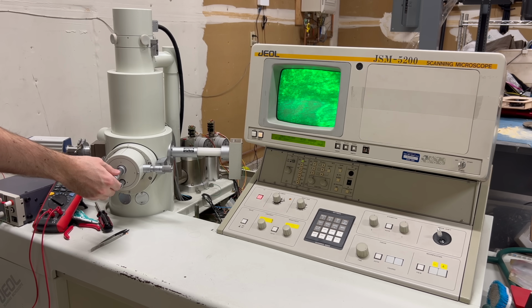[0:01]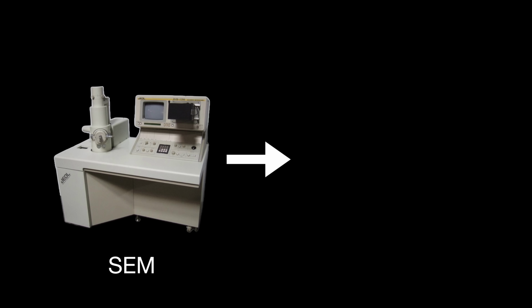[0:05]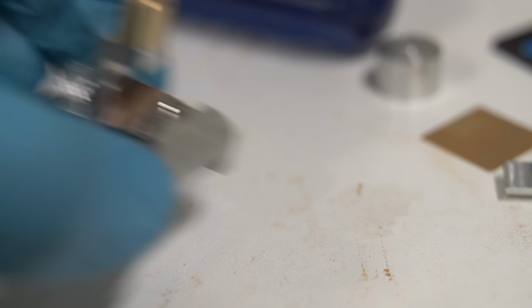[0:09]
In a previous video, I repaired this old scanning electron microscope. Today, we're going to convert my scanning electron microscope into a transmission electron microscope by making this.
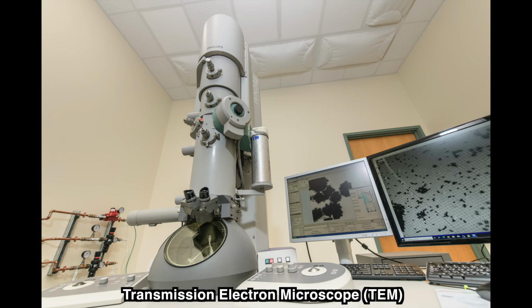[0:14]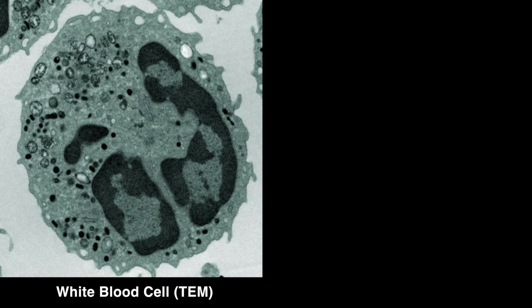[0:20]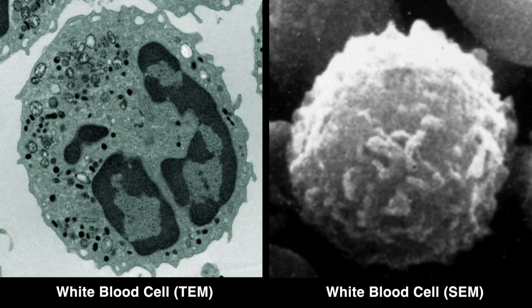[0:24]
Okay, first things first. What is a transmission electron microscope, and why do I want one? Well, the simple answer is that a transmission electron microscope can see things that a scanning electron microscope cannot. However, to fully understand that statement, we need to talk about how an electron microscope actually works.
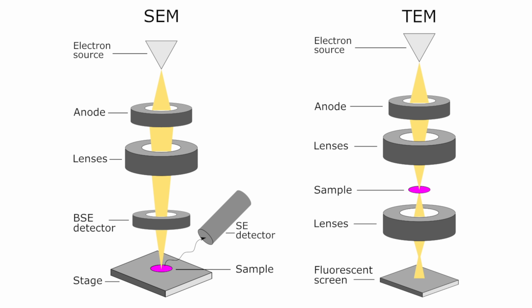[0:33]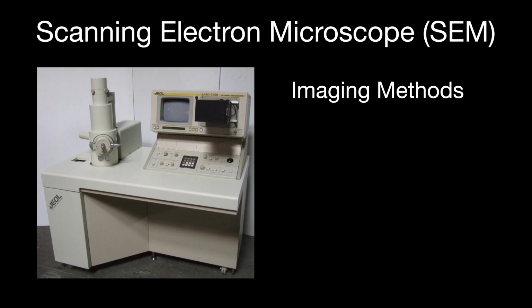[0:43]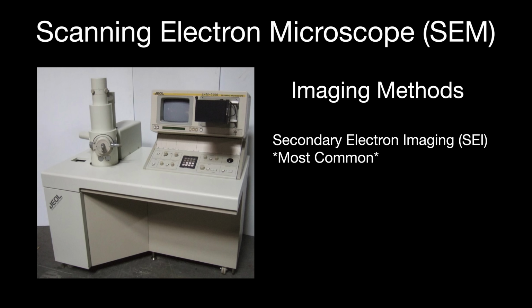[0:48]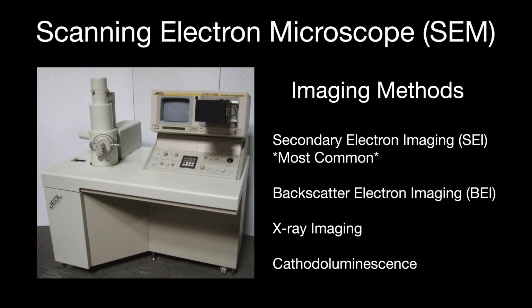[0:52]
You see, all electron microscopes use electrons to create an image, but the exact way that those electrons are used to create the image differs depending on what type of microscope you're using. In a scanning electron microscope, or SEM for short, images are usually created using something called secondary electrons. There are other methods, but secondary electron imaging is definitely the most common.
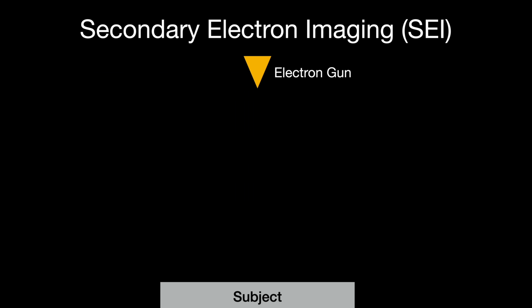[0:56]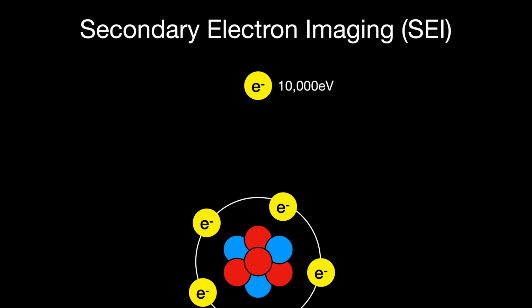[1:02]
Here's how it works. We shoot high-energy electrons at a single spot on our subject to be imaged. This high-energy electron crashes into a sample surface and interacts with one of its atoms, transferring a small fraction of its energy to an electron in the atom. This energy, while small compared to the incoming electron, is still more than enough to eject the electron from the atom. We call these low-energy ejected electrons secondary electrons. And to avoid confusion, we call the high-energy incident electrons primary electrons.
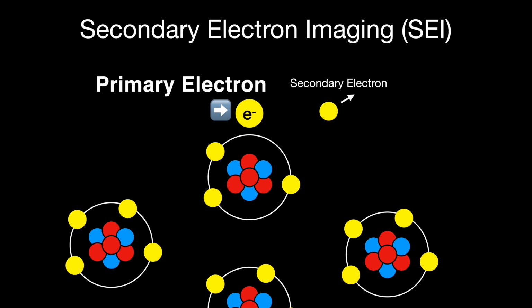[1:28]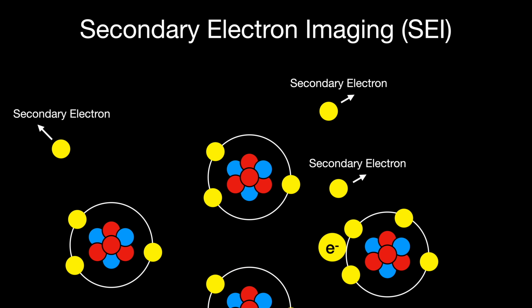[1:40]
Even though we've already caused the emission of a secondary electron, that's not the end of the journey for the primary electron. You see, even though it's lost a little energy, it still has more than enough to continue onward, smashing into more atoms and liberating more and more secondary electrons before it is either absorbed or escapes the sample. This is fortunate because it means that for every one input primary electron, we can get many output secondary electrons.
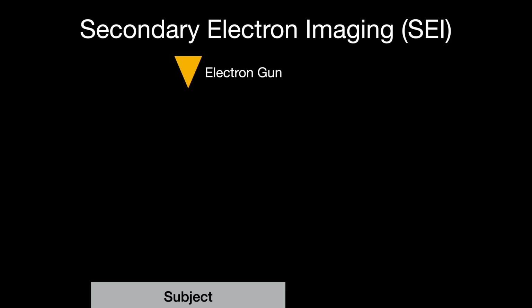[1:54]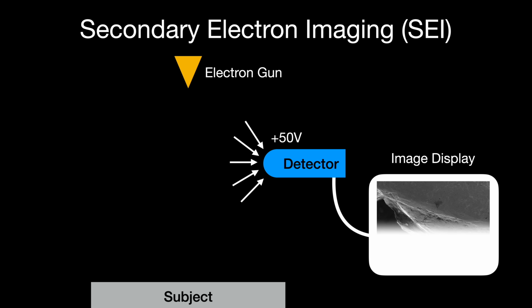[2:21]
Inside our microscope, we have an electron detector. This detector has a small positive voltage on it, which attracts electrons. However, the high-energy primary electrons move so fast that they are essentially unaffected. The low-energy secondary electrons, however, move slowly enough that they can be sucked into the detector where they are counted and turned into a brightness value for a single pixel in our image. By scanning across the subject, we can build up our complete image, pixel by pixel.
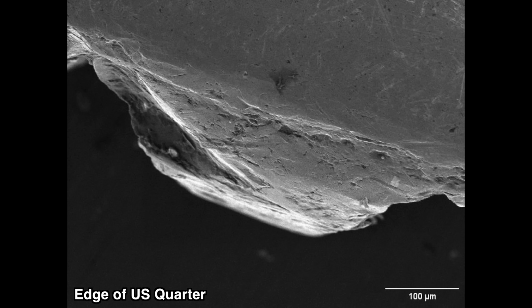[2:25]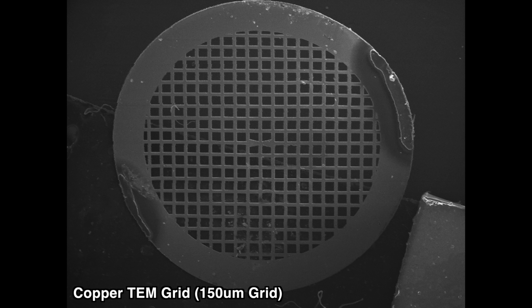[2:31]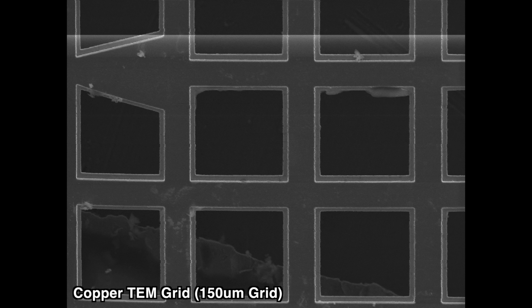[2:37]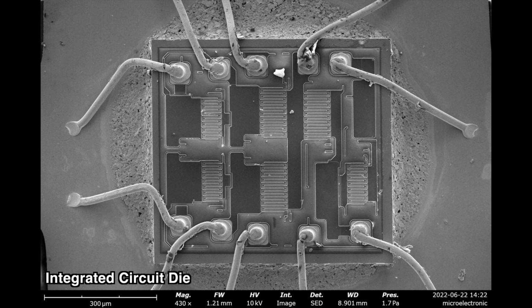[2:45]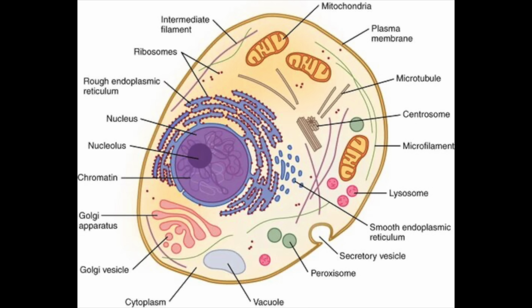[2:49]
Secondary electron images like this are probably the most common type of image in scanning electron microscopy. However, there is a major downside. Because secondary electrons are generated at the surface of the sample, the resulting image only contains details about the sample's surface, and tells you nothing about internal features. This makes scanning electron microscopes well suited to imaging things like integrated circuits, but poorly suited to imaging the internal structure of cells and tissues without special preparation.
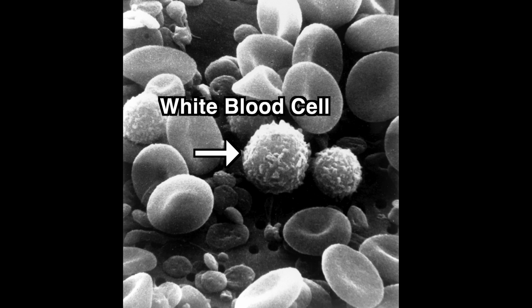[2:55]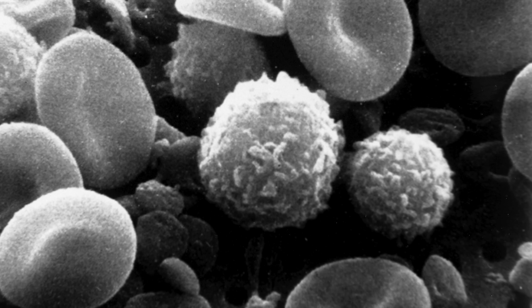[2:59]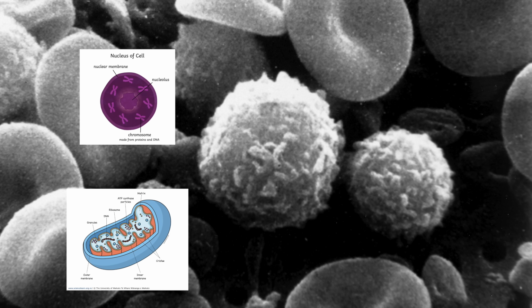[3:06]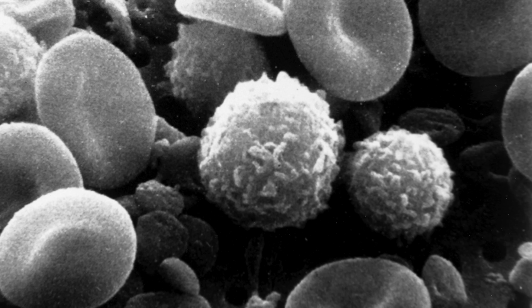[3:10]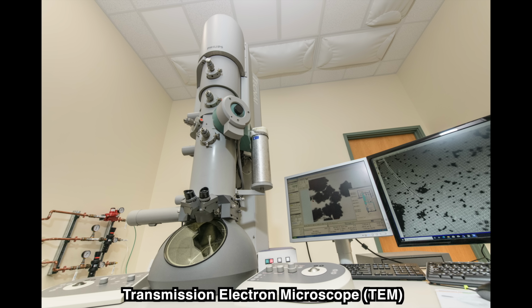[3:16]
Here is a secondary electron image of a white blood cell. We can see the outer surface clearly, but we don't get a direct view of the organelles inside. In order to see internal structures like nuclei, mitochondria, and internal membranes, we need to look at more than just the cell's surface. A secondary electron image isn't going to cut it here. So what do we do? Well, this is where the transmission electron microscope comes in.
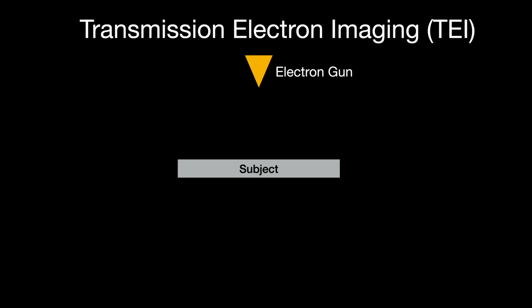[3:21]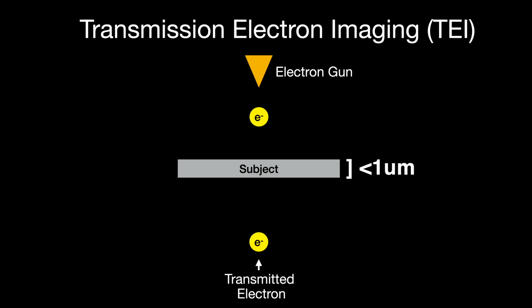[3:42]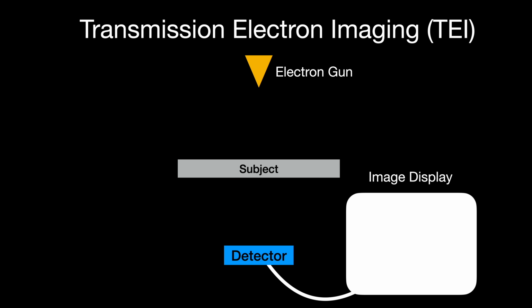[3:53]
In a transmission electron microscope, or TEM for short, the imaging is done using transmitted electrons instead of secondary electrons. Here's how it works. We shoot high-energy electrons through a thin sample. This sample must be thin enough that a significant portion of the electrons will pass through. The electrons that pass straight through are called transmitted electrons. Some electrons pass through, but get deflected by the atoms in the material. These are called scattered electrons, while some electrons get absorbed altogether. To capture a transmission image, we install a detector directly below the sample and measure the number of transmitted electrons. This becomes our final image.
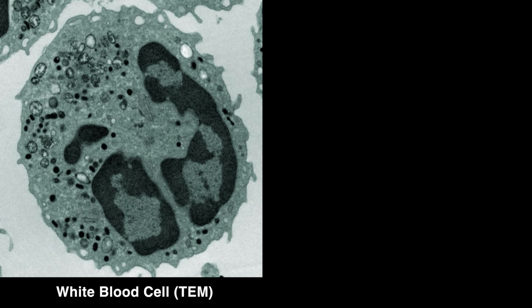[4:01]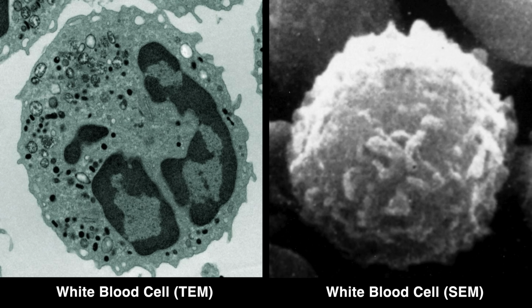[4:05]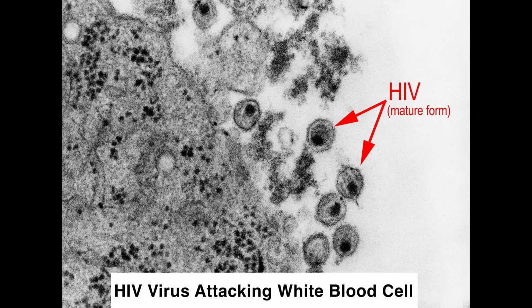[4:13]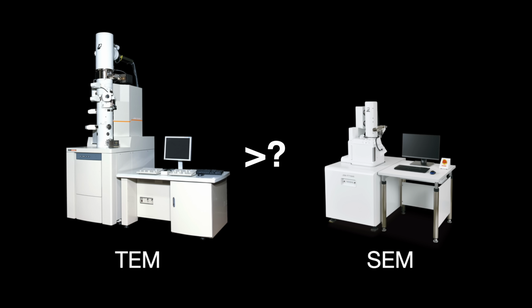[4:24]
Here is a transmission electron image of a white blood cell. If we compare it to the secondary electron image from earlier, you can see that the TEM image contains far more details about the internal workings of the cell. This makes transmission images vastly more useful for diagnosing problems with cellular machinery. However, a TEM isn't always better than an SEM. The SEM and TEM are two different tools, each with different purposes.
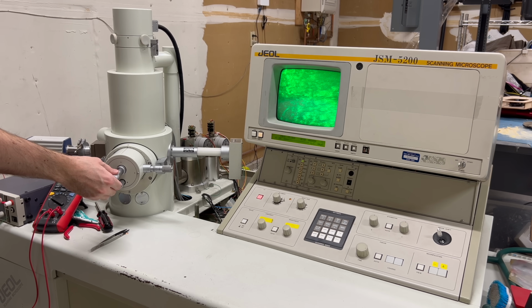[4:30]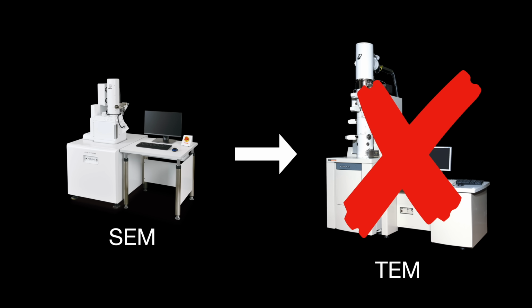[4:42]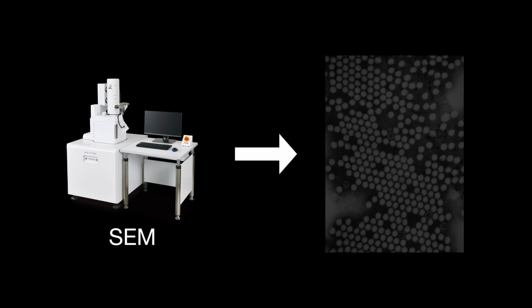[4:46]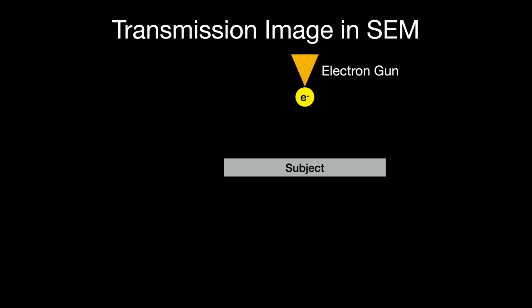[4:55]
But given that I have a working SEM, I can't help but wonder, can I convert it to a working TEM? Well, the answer is no, but also yes. You see, we can't turn the SEM into a true TEM, but we can trick the SEM into giving us a transmission electron image. Here's how. Let's say we put a thin specimen in our SEM. When a primary electron from the beam reaches our subject, one of two main things is going to happen.
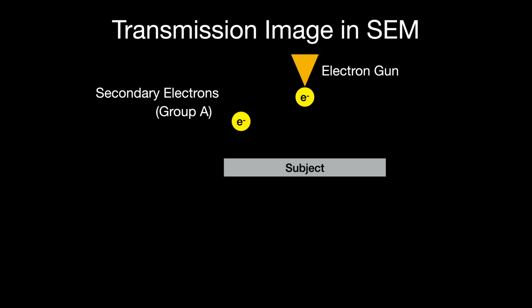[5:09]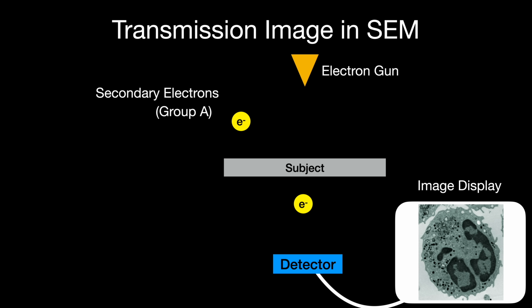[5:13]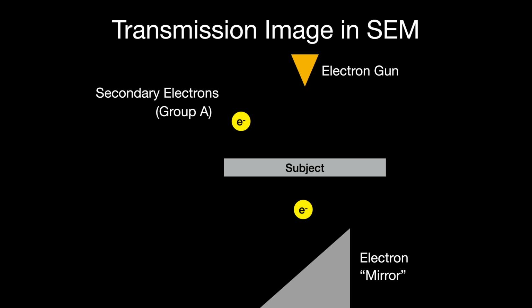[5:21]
Some primary electrons will interact with the sample and generate secondary electrons from the sample itself. Let's call those group A. Other electrons may transmit through the sample. These are the electrons that would make up a transmission image in a normal TEM, but our SEM doesn't have a detector capable of seeing them. But if those electrons strike another surface, then they will generate an entirely different set of secondary electrons of their own. Let's call those electrons group B.
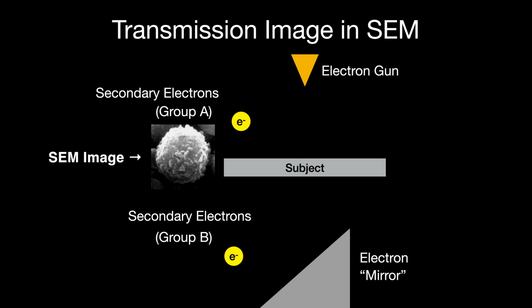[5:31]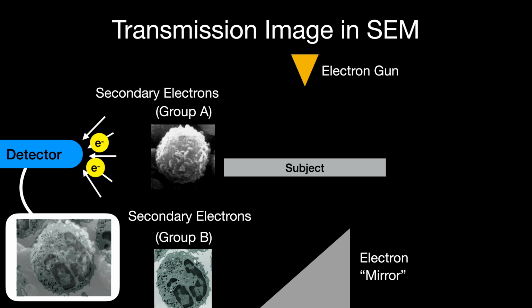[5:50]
Group A secondary electrons constitute our normal SEM image. Group B secondary electrons, however, constitute our transmission image. But now we have a problem. The detector in the SEM detects all secondary electrons, so both group A and group B electrons will be measured. So the resulting image is going to be some weird hybrid of a secondary electron and a transmission electron image.
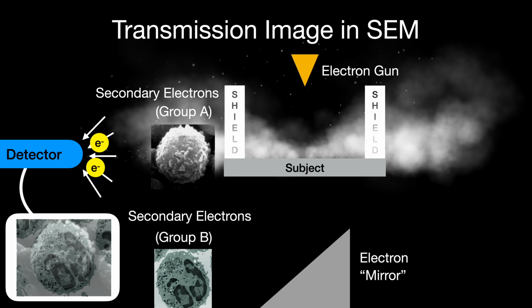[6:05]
If we want to view our transmission electron image only, then we need to block all group A secondary electrons from reaching the detector. We can do that by installing some kind of conductive shield around the sample. If the shield is made correctly, it will block the group A electrons without affecting the primary electrons or the group B secondary electrons. That way, only group B secondary electrons will reach the detector, and thus our displayed image will be a pure transmission electron image.
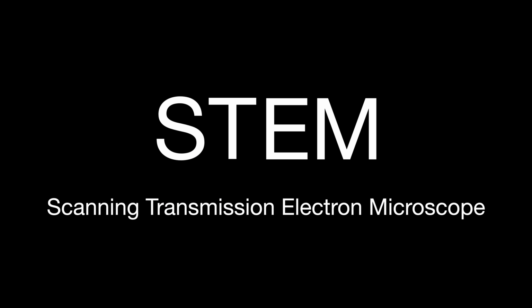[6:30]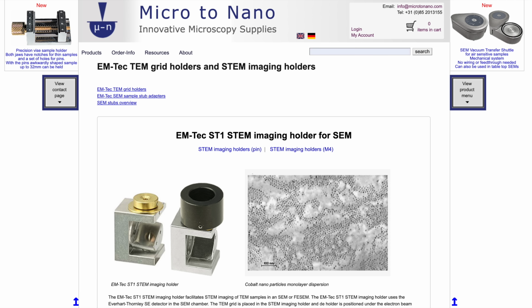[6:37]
This is how we can convert our SEM into an STEM, or Scanning Transmission Electron Microscope. The only thing we need is a relatively simple adapter. These adapters are actually fairly common, though like most lab equipment, they are ludicrously overpriced. So I decided to make my own.
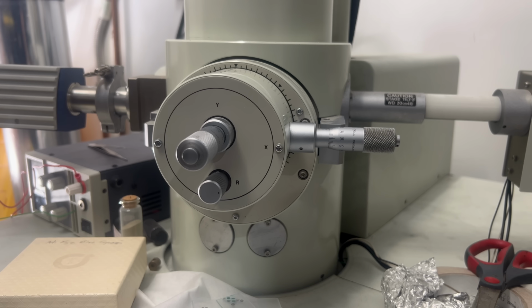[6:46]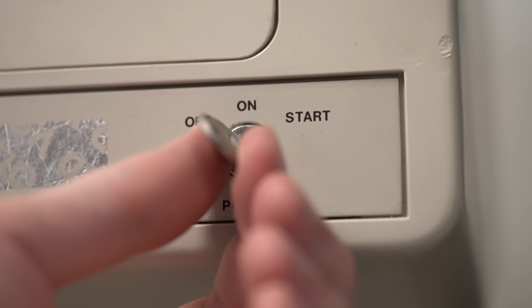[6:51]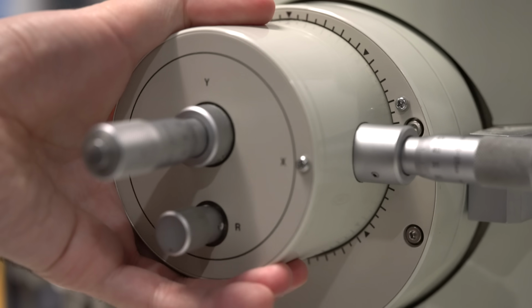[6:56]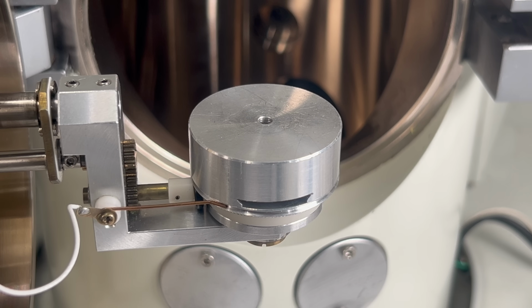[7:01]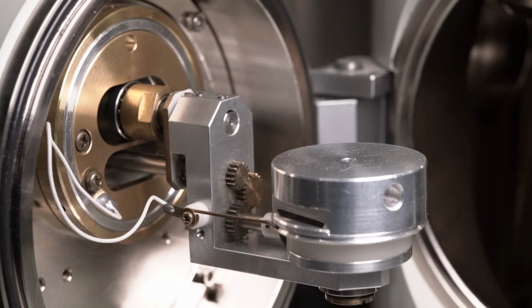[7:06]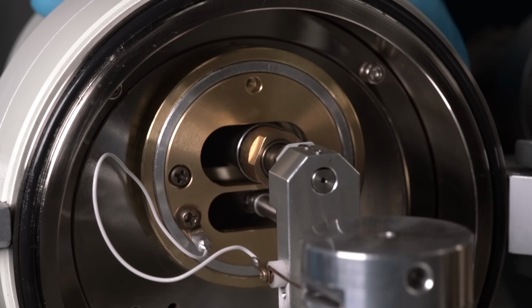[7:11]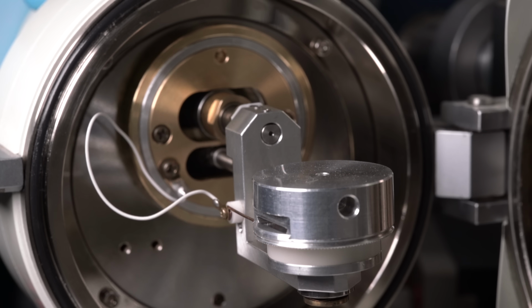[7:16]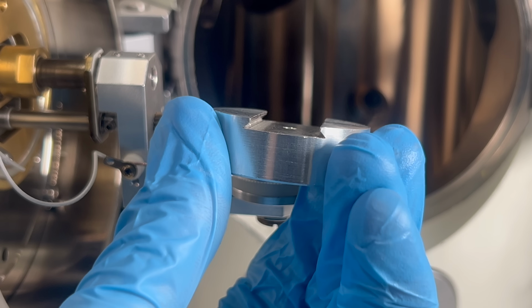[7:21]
Okay, so the first step in making this work is to figure out exactly how much space we have to work with. So let's fire up the microscope and vent the chamber to atmosphere. Let's take a look. Okay, there are three main things to note here. First, we have the sample stage. This is where we normally mount the things that we want to image. This stage is fairly simple and has the ability to move forward and back, left and right, and also rotate and tilt.
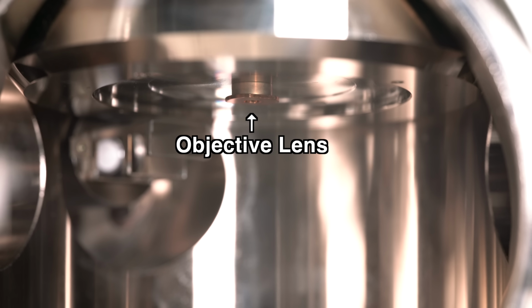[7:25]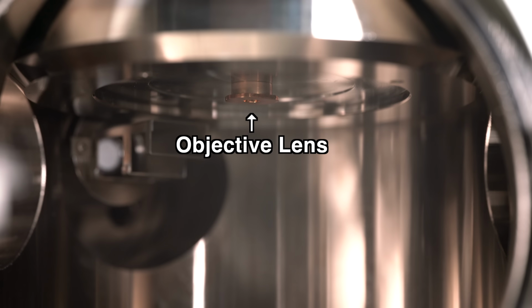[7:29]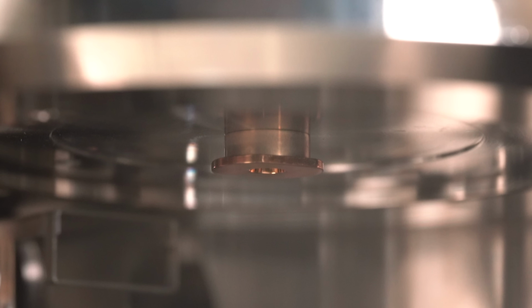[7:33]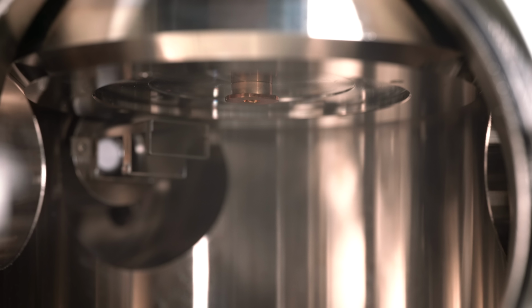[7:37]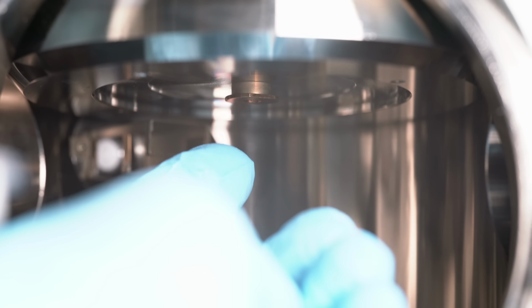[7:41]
This stage also has this little dovetail joint that allows us to slide different sample holders on and off quickly and easily. The next thing to note is the objective lens here. Most of the lens is not visible from here, but you can see this copper-colored bit. That's the objective lens aperture holder, and it's the lowest part of the lens assembly. Anything we add to the chamber must clear that piece, or we will damage the SEM.
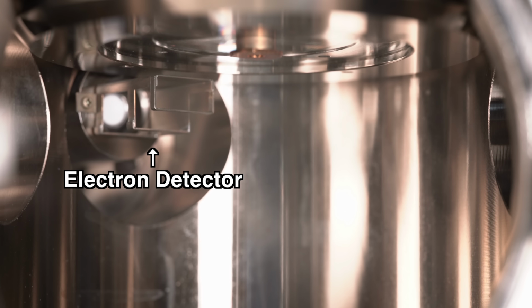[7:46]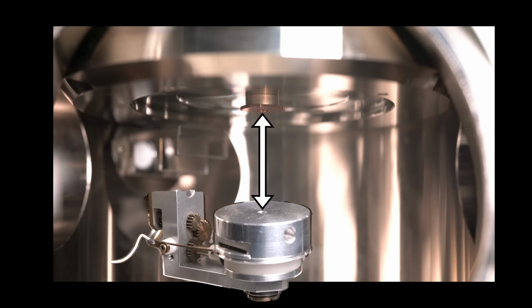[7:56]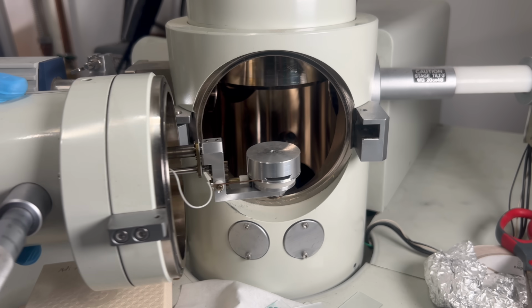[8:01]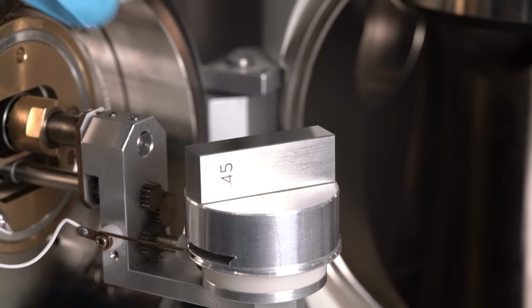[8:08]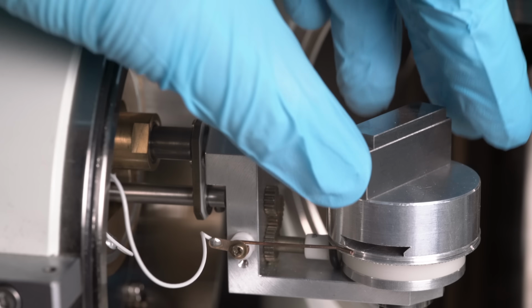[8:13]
Lastly, we have the secondary electron detector here in the corner. Fortunately for us, this component is so far away that we don't really have to worry about bonking it. Really, the only critical measurement here is the distance from the top of the sample holder to the bottom of the objective lens. The only problem is that we can only measure that distance with the door closed. I carefully stacked some gauge blocks on the sample holder and peered through the tiny gap as I closed the door. It looks like we have just over 0.55 inches. That is not a lot of space to work with.
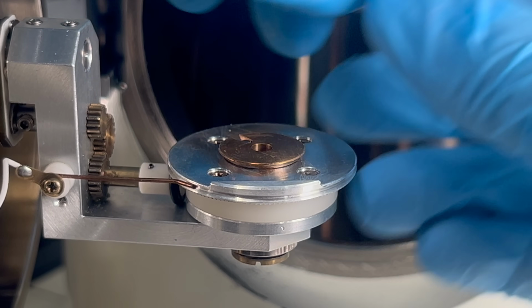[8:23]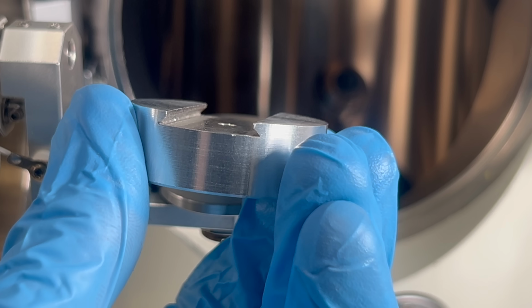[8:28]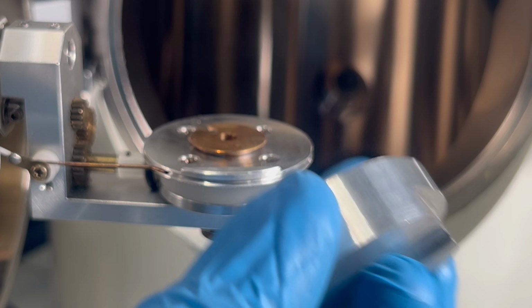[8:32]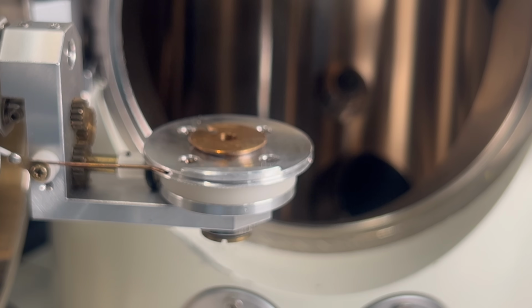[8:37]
However, I have an idea. See this sample holder? This thing has way more meat on it than necessary. If I were to copy this design but make it more low profile, I could claw back at least a quarter inch or so. That might just be enough.
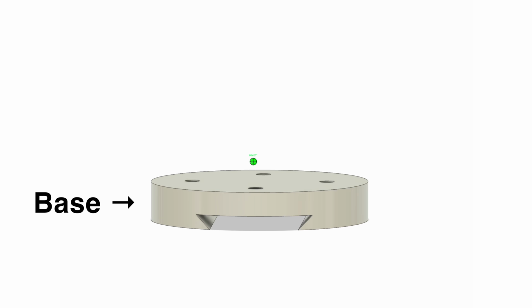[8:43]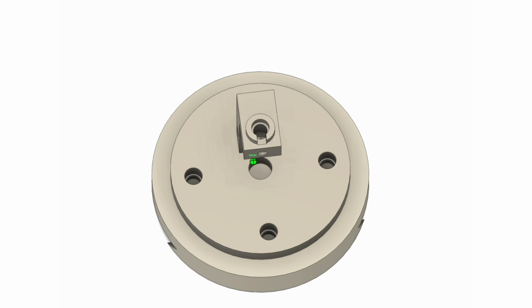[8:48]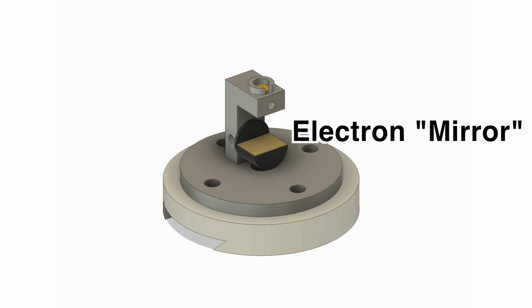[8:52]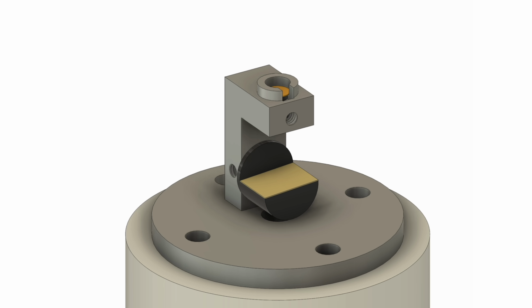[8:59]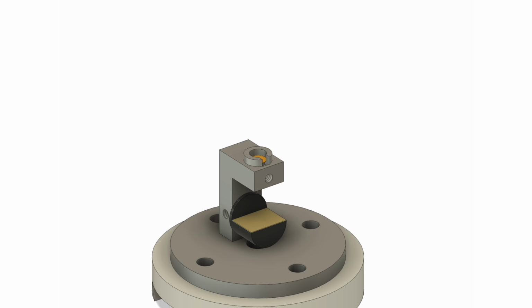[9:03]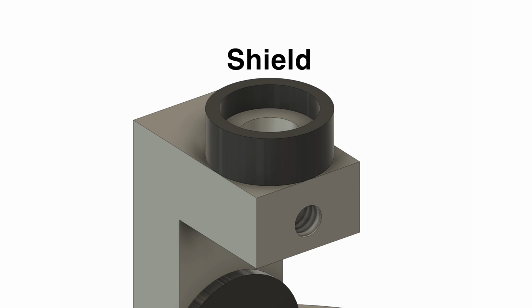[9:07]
I made a quick mock-up of my version of the STEM-in-SEM Adapter. You can see that I've made a low-profile dovetail adapter here, and on top of that I have this piece that holds the sample grid here. In addition, I have this movable mirror, for lack of a better term, which will generate the secondary electrons. This piece is able to be rotated so we can find and set the optimal angle. Lastly, I have a spot on top that will allow us to mount a shield to block the unwanted group A secondary electrons.
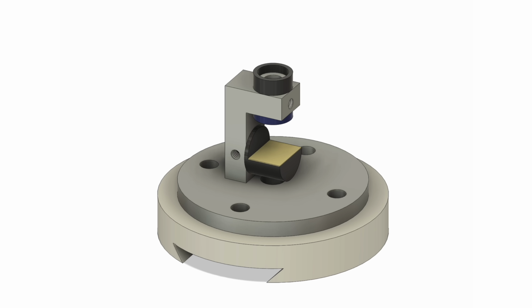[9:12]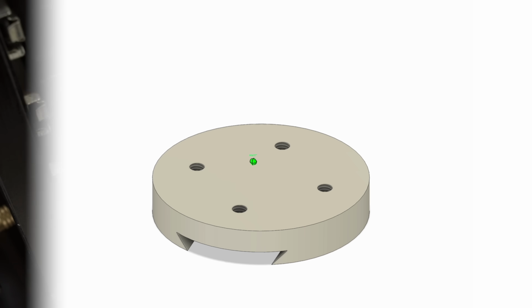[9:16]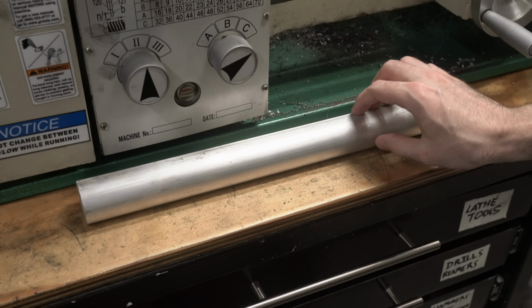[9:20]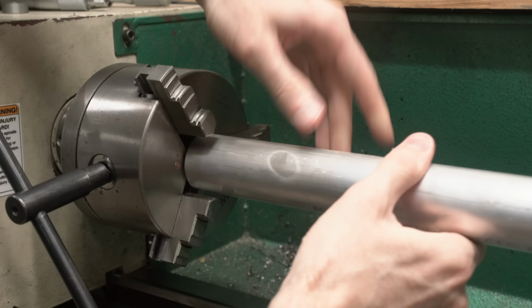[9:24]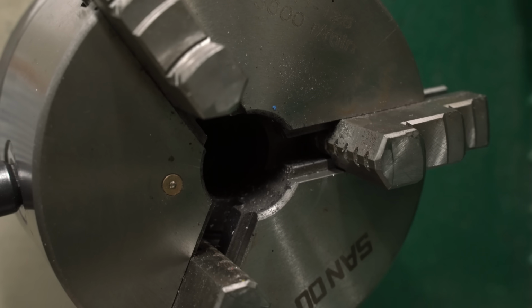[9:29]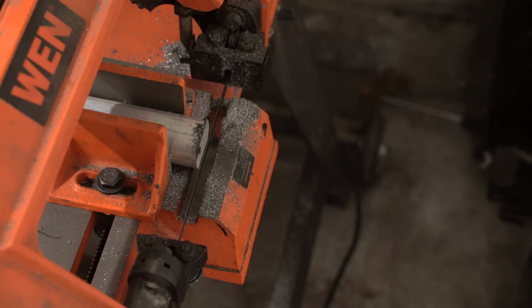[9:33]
Well, I guess it's time to make this thing. I'm going to start by making the base first. Whenever I'm prototyping, I like to start with aluminum because it's easy to machine. Let's get this set up on my lathe. Darn. Small lathe problems. The spindle bore is only 1 inch. No worries, we can just shorten the aluminum piece on the bandsaw first.
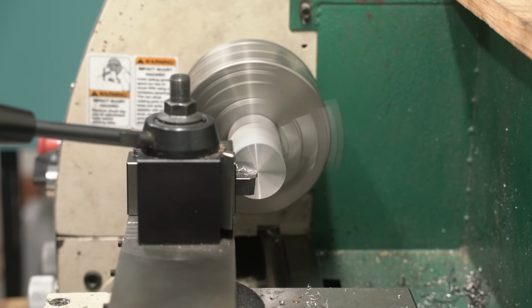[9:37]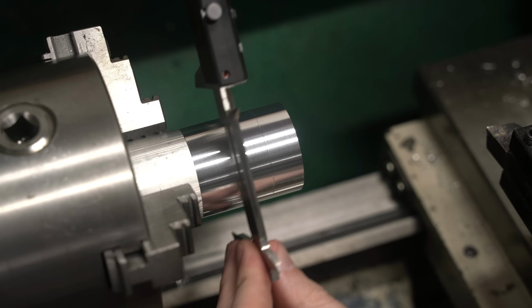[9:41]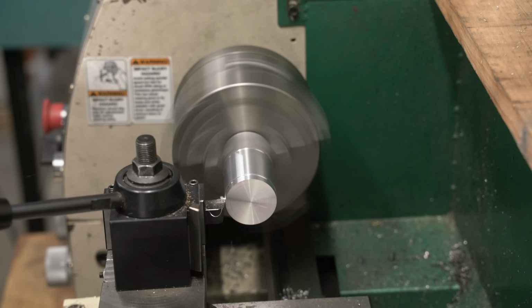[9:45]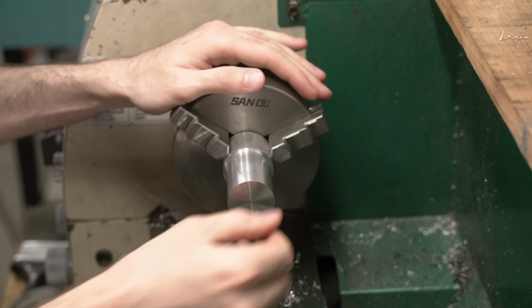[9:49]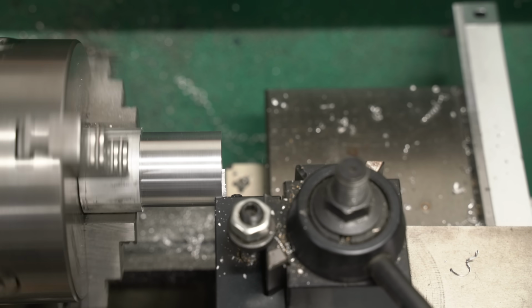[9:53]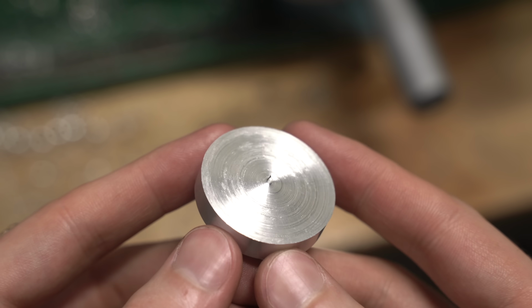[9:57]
Now we're in business. I start by facing the end of the rod, then I clean up the outer diameter. This allows me to measure the current size and then enter the value in the DRO. Now I can bring the outer diameter down to the correct size. Looking good so far? Next, I use my parting tool to cut off a disc of the material. The parting tool left behind a little nub, so we're going to have to remove that.
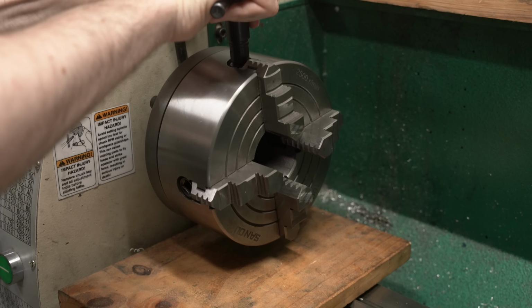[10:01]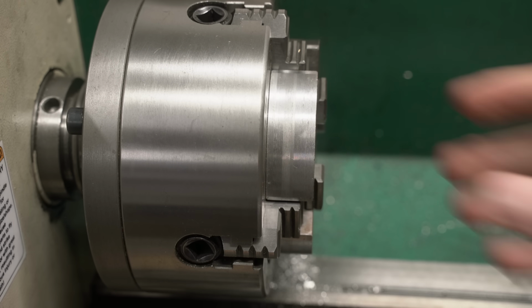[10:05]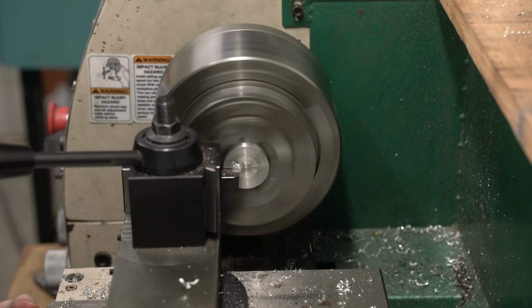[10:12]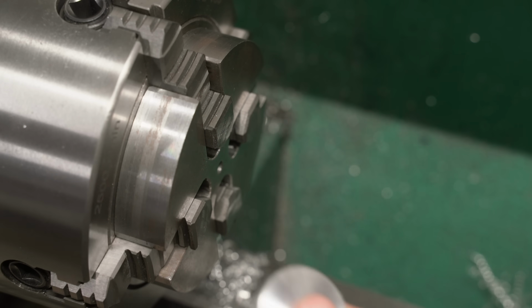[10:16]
This gives me an excuse to use one of my favorite lathe tools. This thing is called a lathe spider. It slides onto my 4-jaw chuck, allowing us to grip thin parts like this and ensuring that the faces are perfectly square to the chuck. Now we can cut the second face and bring the disc to its proper thickness. Now I transfer the disc to the milling machine.
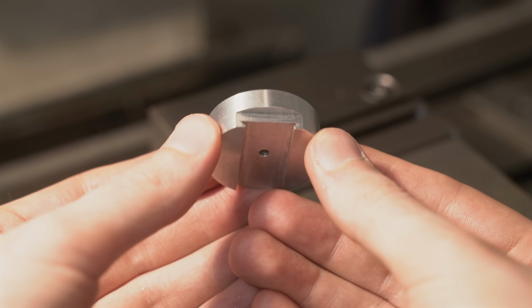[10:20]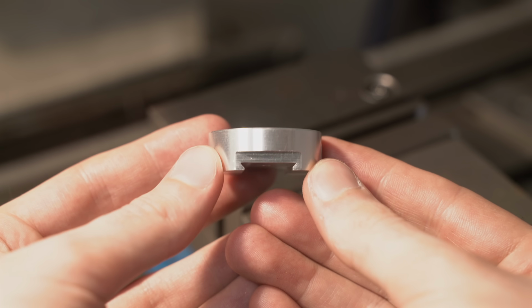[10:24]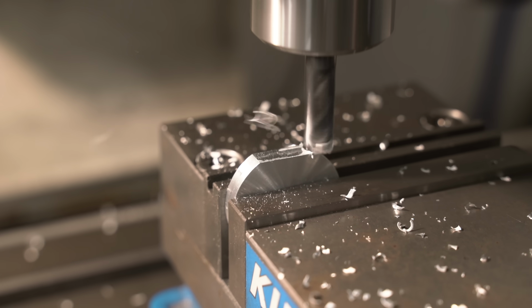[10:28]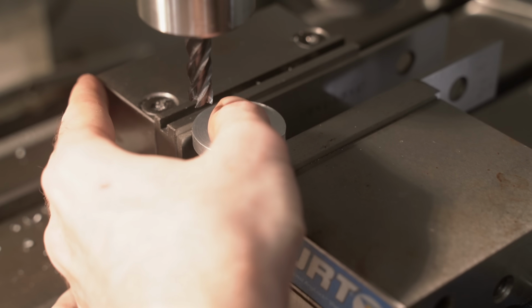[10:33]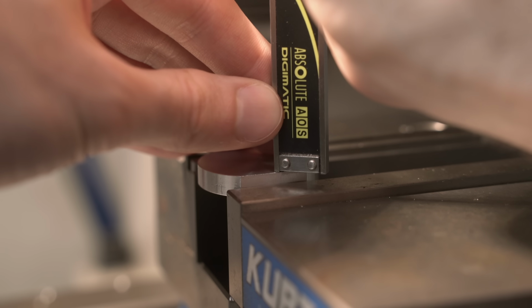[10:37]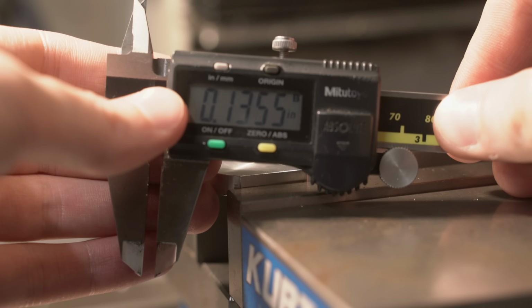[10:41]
As a reminder, I'm trying to replicate this dovetail slot here so that the disc can be mounted in the SEM. The first step of that is to cut a flat face to a specific depth on one side. This flat will also allow us to mount the disc horizontally in the vise. The slot for the dovetail is 1/10 of an inch deep, and I was worried that I might not clear the vise jaws. However, it looks like we just made it.
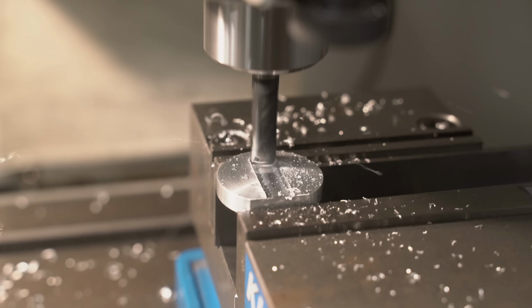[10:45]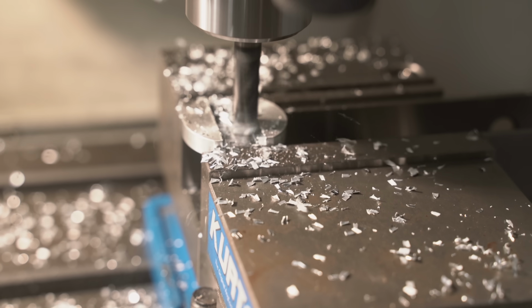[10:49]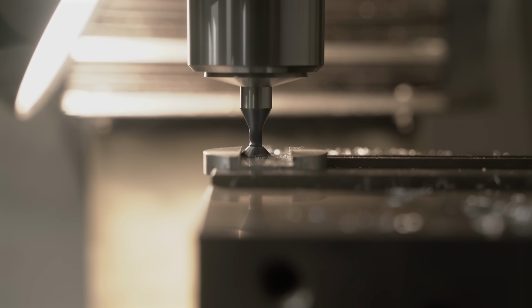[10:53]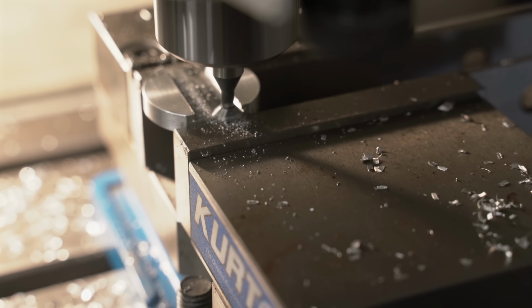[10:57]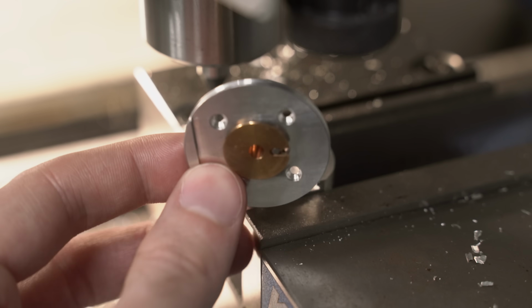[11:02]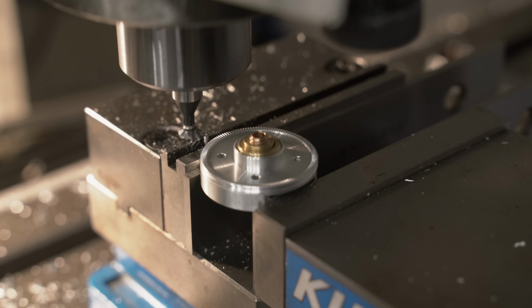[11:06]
I start by using an end mill to cut the slot to the correct depth. Then I side mill to bring the slot to the proper width. I swap my end mill into dovetail mode and start to cut the angled faces into the slot. Measuring the width of dovetail slots can be a little difficult, so I just pulled the mating piece out of the SEM and used it to ensure a good fit. Perfect.
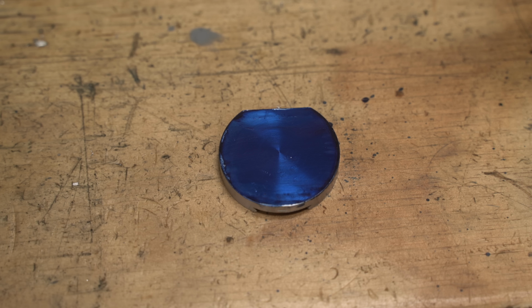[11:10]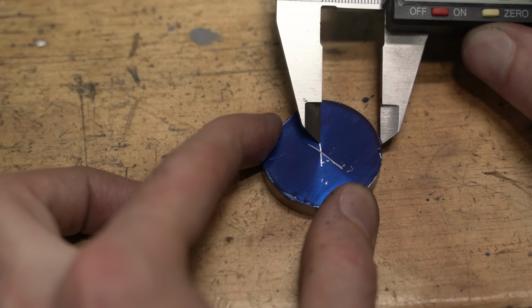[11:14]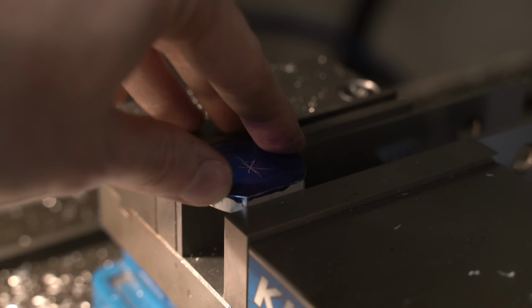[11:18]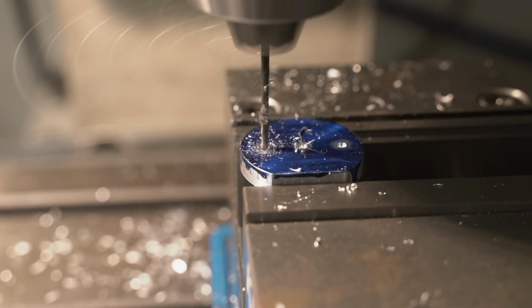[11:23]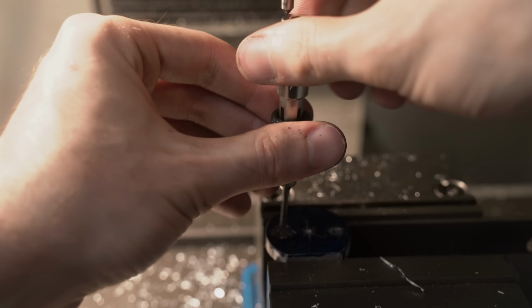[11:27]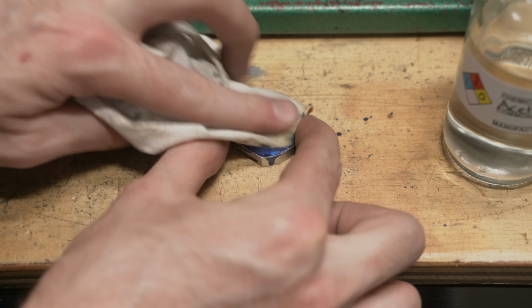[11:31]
Now I need to drill the mounting holes in the top. The alignment of these holes isn't critical, so I just blued the surface and used a pair of cheap calipers to find the center. This will be good enough. I then put the piece back on the mill, using a center drill first to ensure that the drill bit stays on target. Finally, I tap both holes with an M3 thread. Now I just need to clean off the ink with acetone, and we are done with the base.
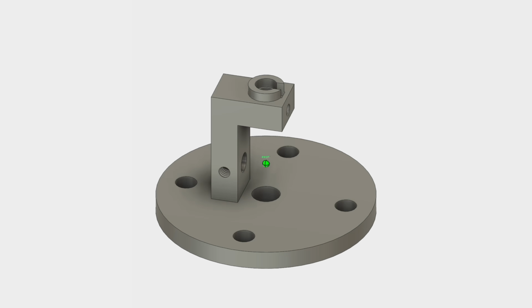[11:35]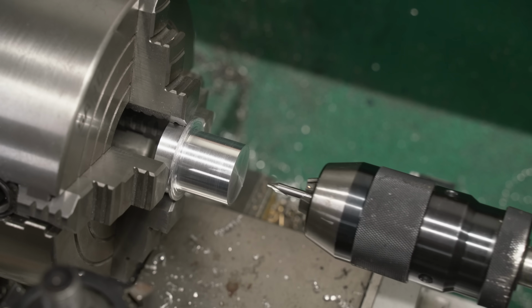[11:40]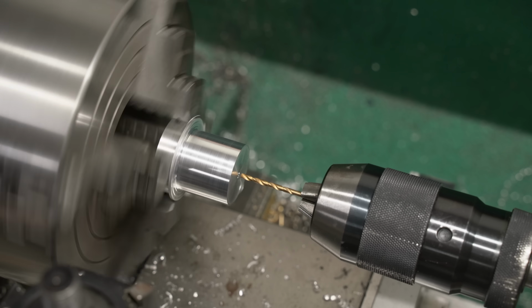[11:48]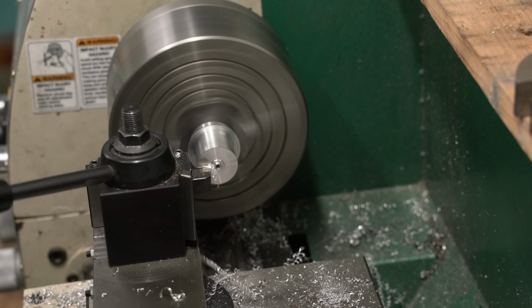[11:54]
Now it's time to make the sample holder assembly. I've got the remainder of the aluminum rod from earlier, and I'm going to start by drilling out the central bore, which is the path the electron beam will take. I'm doing this first because I will be using it to reference the center of the part for all the other machining operations. Next, I'm going to use the lathe to form any of the remaining circular features before moving on to the milling machine.
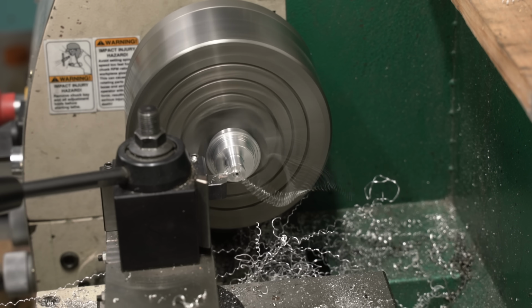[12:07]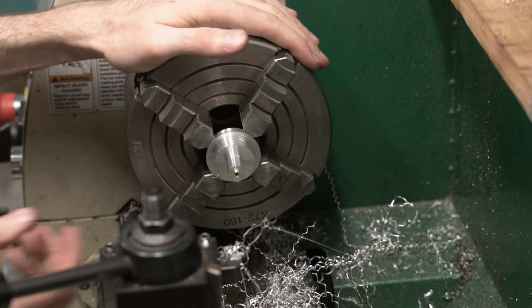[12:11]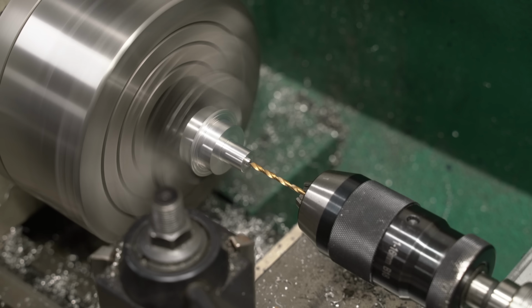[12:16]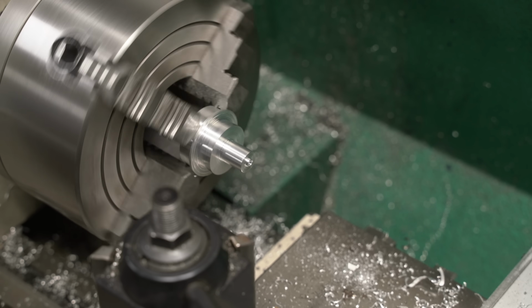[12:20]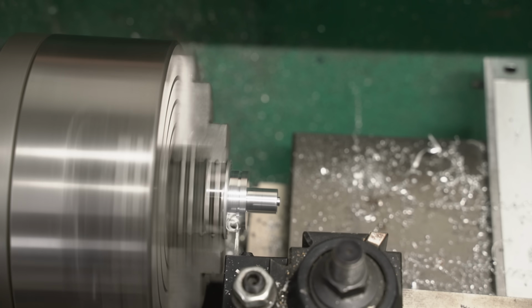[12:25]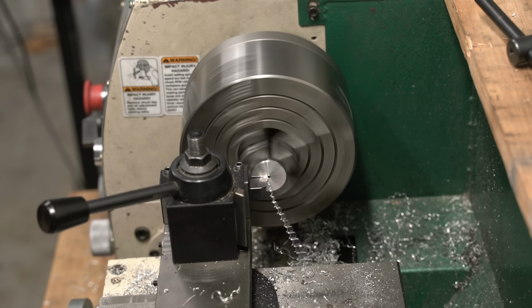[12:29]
While I'm here, I'm going to use the lathe to remove as much of the unwanted material as possible. I find that when it comes to small machine tools, lathes are generally faster than milling machines at removing material, so this will also save me some time. After that's done, I use a slightly larger drill than before and drill just a few millimeters in. This will form the step where the TEM grid will rest. Now all that's left is to use the parting tool to remove the sample holder from what remains, flip it around, and face the backside to bring the flange to its proper thickness.
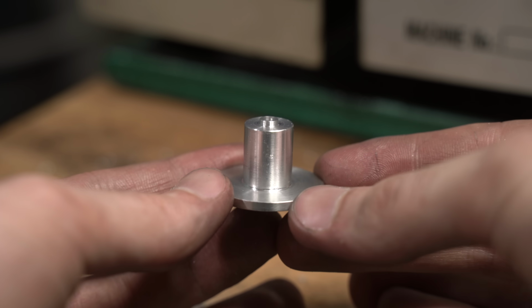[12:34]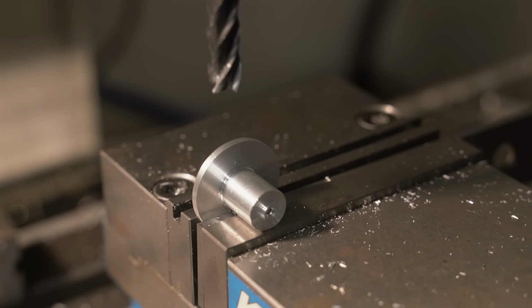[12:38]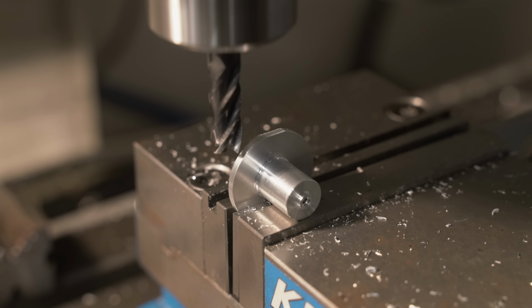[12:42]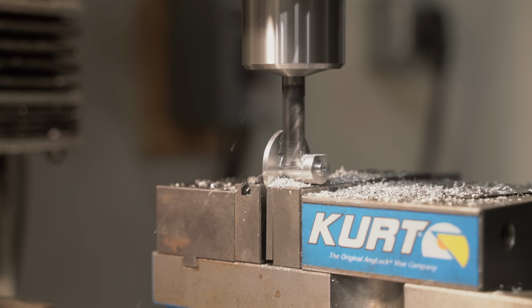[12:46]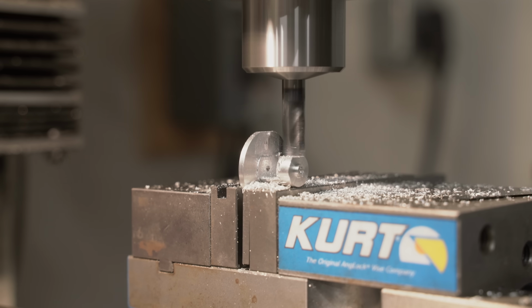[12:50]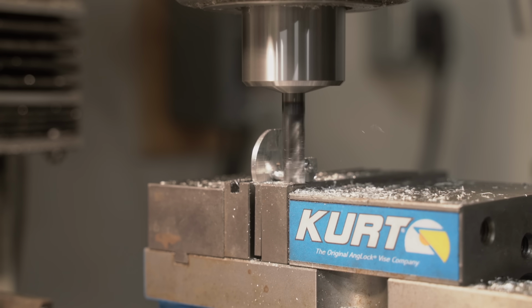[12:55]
Alright, that's everything on the lathe. Time to move the part to the mill. Again, the first thing I do is machine a flat spot so that later, when this part goes back in the vise, I can guarantee it's facing in the proper direction. Then I mill a slot into the sample holder. This is where the movable mirror will be mounted. After that, I trim the excess from the edges. Looking good so far.
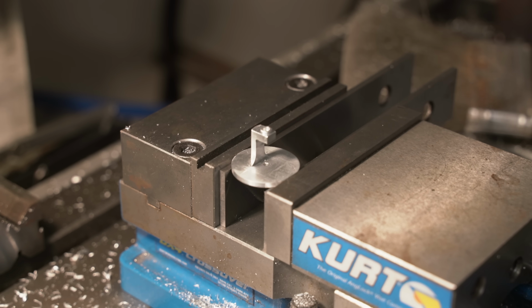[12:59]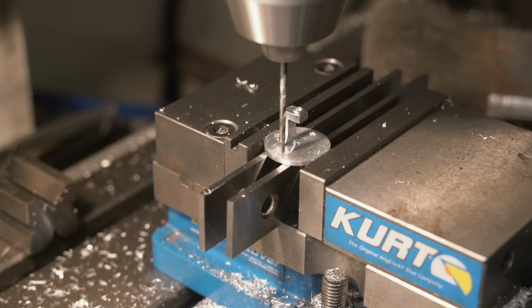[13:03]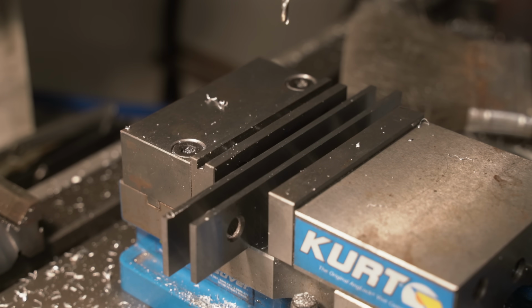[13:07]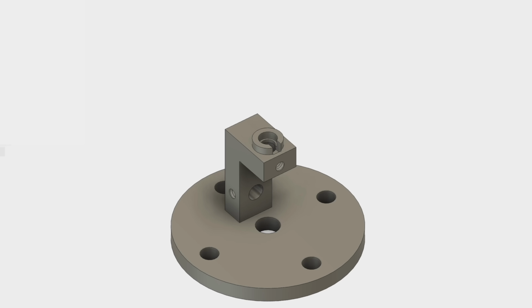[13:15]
Next, I reposition the sample holder vertically and drill the matching mounting holes so that it will screw into the base we made earlier. I almost forgot. We need one more hole here for the shaft around which the mirror pivots. Perfect. The last feature to make is this tiny slot in the top collar.
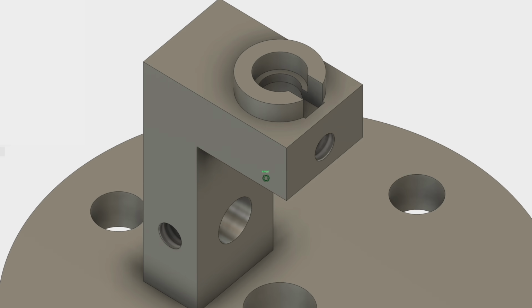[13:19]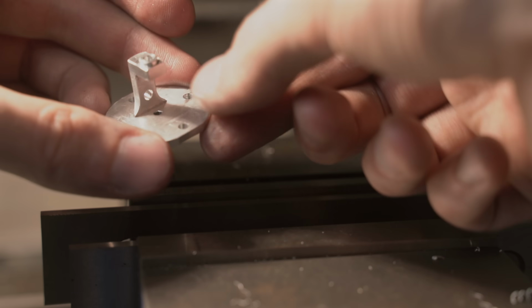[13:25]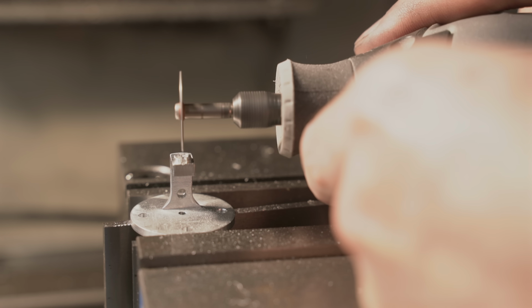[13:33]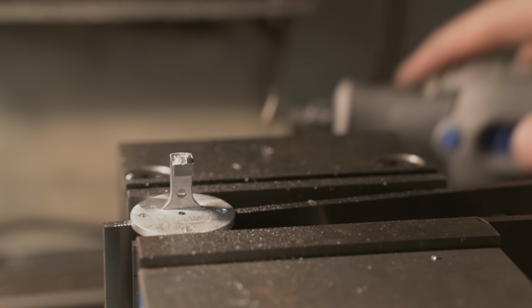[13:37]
This is needed because it allows us to get a pair of fine-tipped tweezers in and grab the tiny 3mm TEM grid. Unfortunately, my mill is not capable of the speeds necessary to run such a tiny end mill. So to make this slot, I just used a Dremel cutoff wheel. This should be good enough.
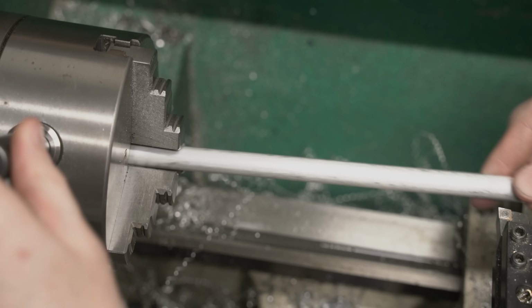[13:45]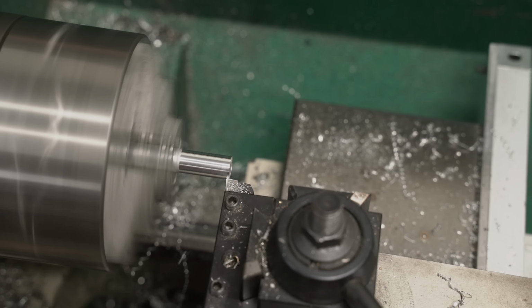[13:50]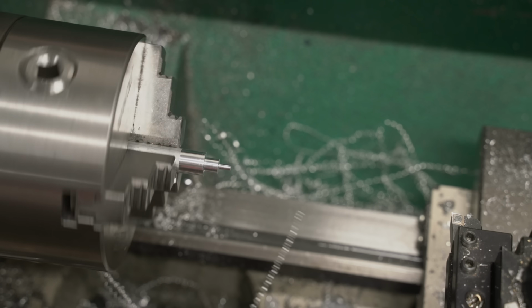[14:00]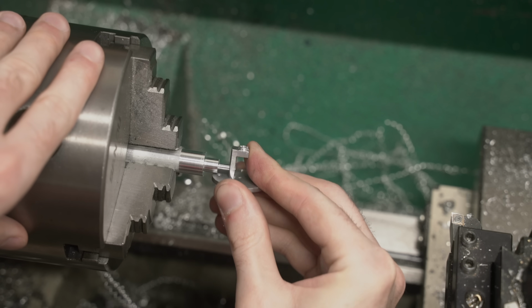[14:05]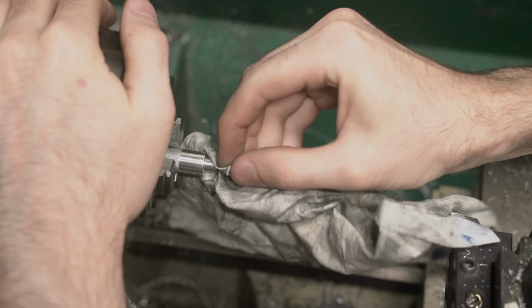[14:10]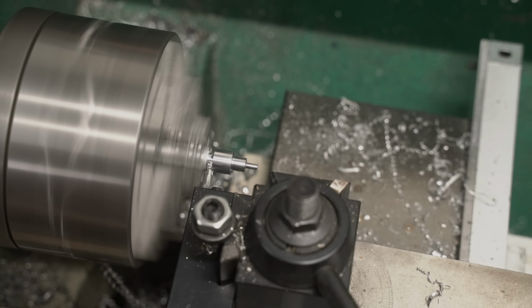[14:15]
Okay, time to make the movable mirror. This part is pretty simple, but the order of operations really matters for small parts like this. We start with an aluminum rod and then clean up the diameter. Then we machine the tiny 3mm shaft first. After that, we machine the mirror's outside diameter. Once that's finished, I can test to see if the shaft will fit in the sample holder. It's close, but a little snug. A little bit of sanding with some 1000 grit sandpaper should do the trick. That's more like it. Now I'm going to part off the mirror.
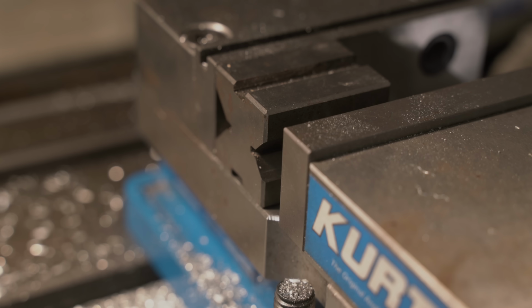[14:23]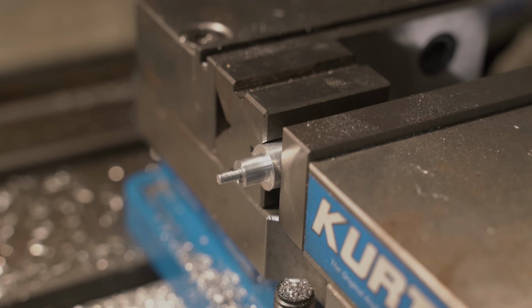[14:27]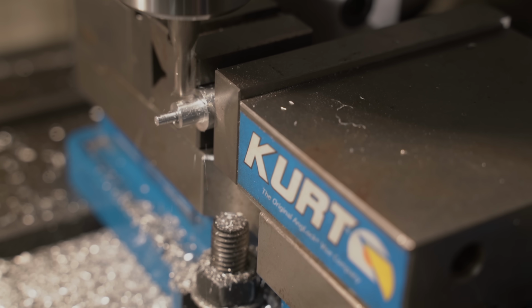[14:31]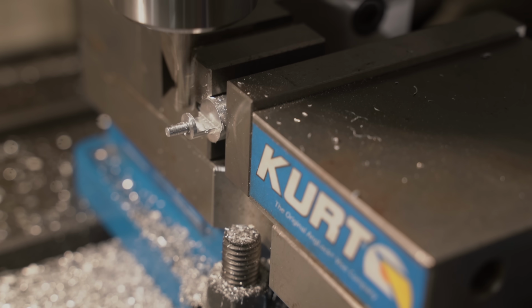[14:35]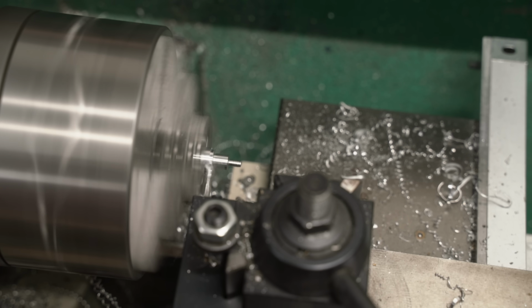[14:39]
However, I'm including a large chunk of extra material because we need to have something substantial that we can hold in the vise. If we don't leave this part, we'd be forced to hold it by the tiny shaft, which is far too small to withstand such abuse. Now I can use an end mill to machine the flat side of this part. Perfect. Now I take it back to the lathe and use a parting tool to separate the finished mirror from the extra material. I'll go hit the edges with a file off camera.
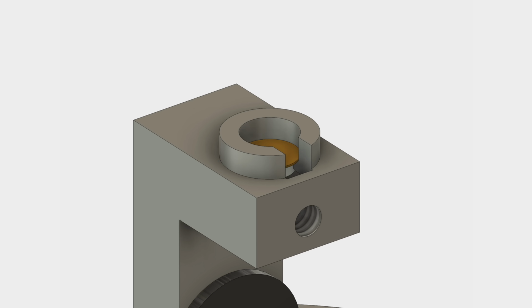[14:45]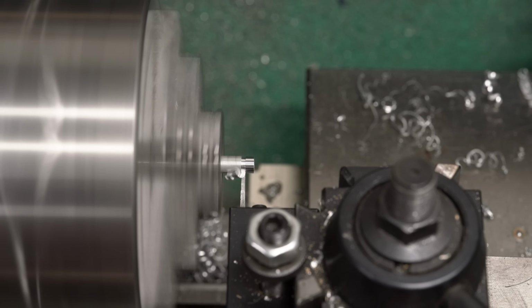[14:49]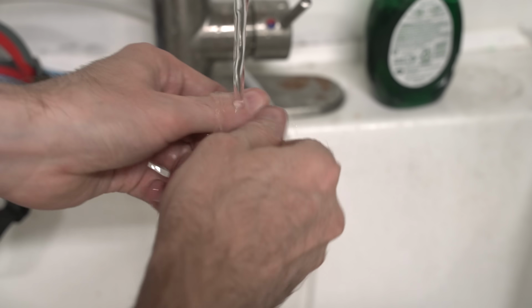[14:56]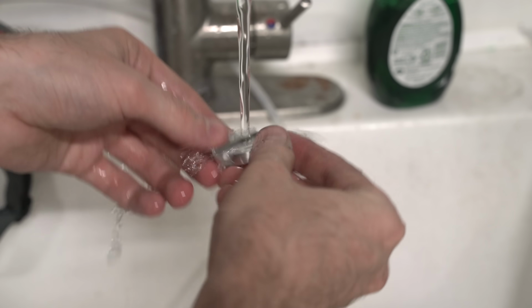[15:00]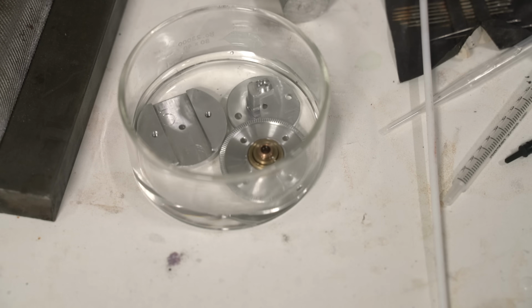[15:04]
The last part I need is the shield. This piece is really simple. Just a small piece of aluminum tubing that fits neatly over the top collar. Awesome. Before we put anything in the SEM, we need to clean the parts to remove any oils or metal dust. I wash them with soap and water first, then give them a quick bath in acetone.
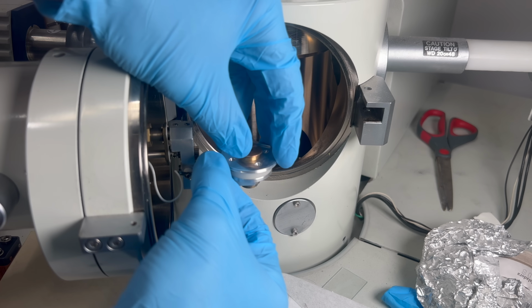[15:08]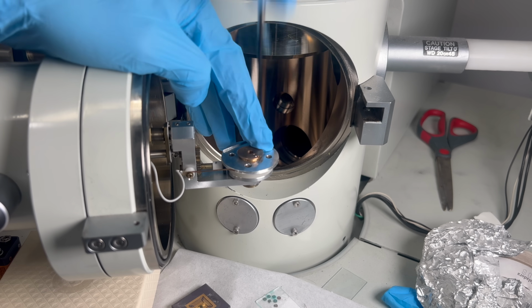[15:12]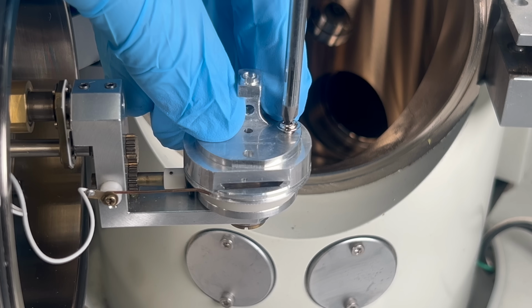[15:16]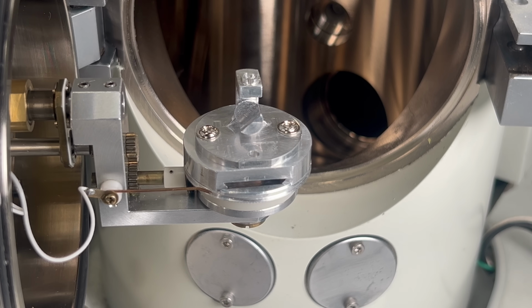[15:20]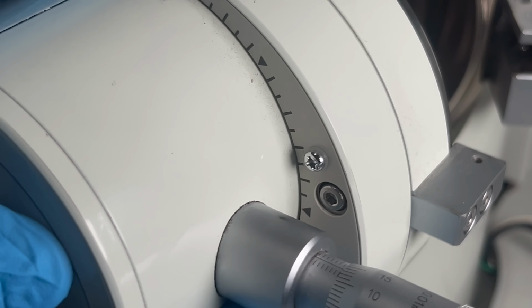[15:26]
Finally, it's time to test the STEM-in-SEM adapter for real. I first reinstall the mounting bracket that I removed earlier. Then I slide on the aluminum base plate and screw the sample holder onto that. Next comes the movable mirror. For the first test, I want to see what it looks like empty, without a TEM grid or shield installed. Okay, fingers crossed. Let's see what we have so far.
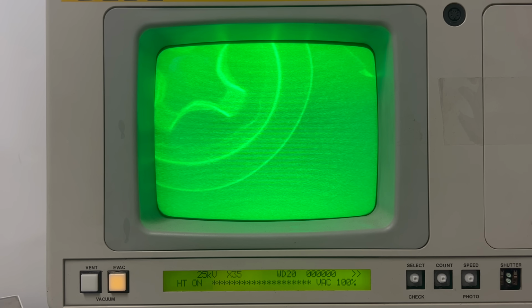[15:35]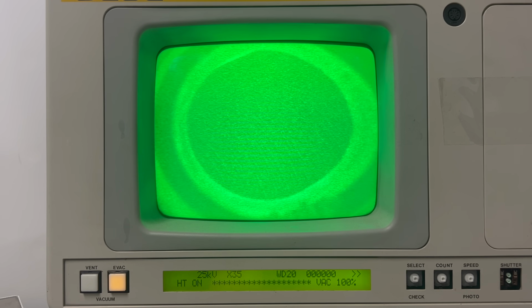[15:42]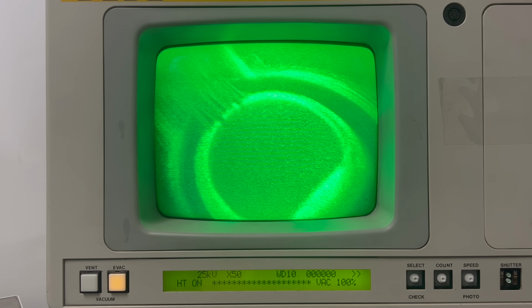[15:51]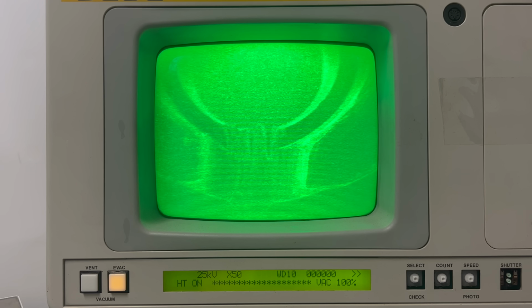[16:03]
Where are we? Oh, I found one of the screws. That should mean our destination is nearby. There we are. This is the spot where the TEM grid will be inserted. You can see the 2mm slots that allow for insertion of the fine tweezer tips. You can also see the mirror below. Something that is important to note here is that the inside walls are glowing brightly. This is because the electron beam is striking the walls and causing them to emit a lot of secondary electrons. Installing the shield should fix that.
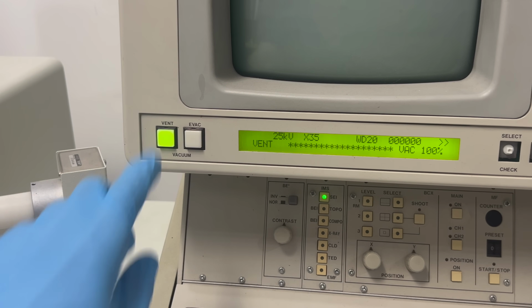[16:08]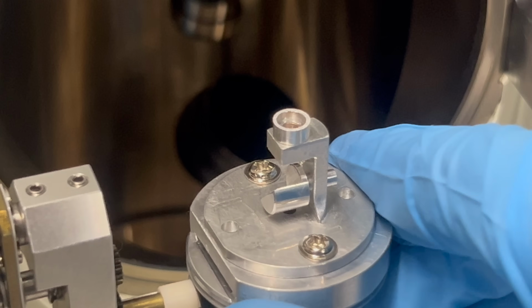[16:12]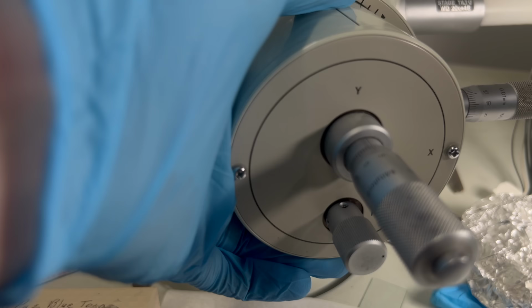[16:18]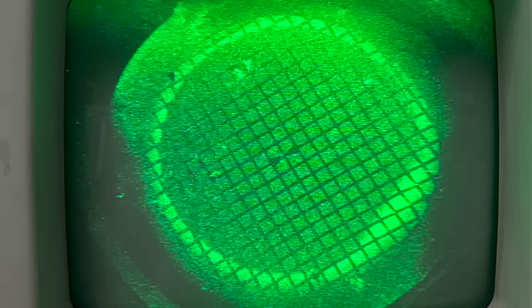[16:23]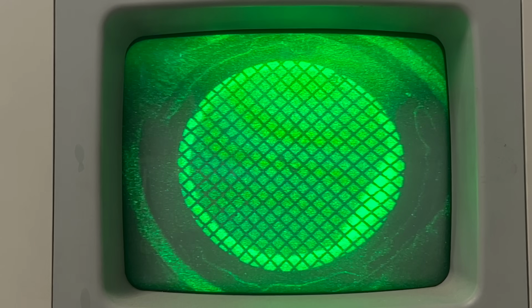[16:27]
Okay, time to add the TEM grid and shield. I vent the chamber to atmosphere and add a blank grid to the sample holder. Then I install the shield on top, and rotate the entire assembly so the mirror is pointed roughly at the detector. Alright, let's go. Nice, I can see the metal grid. Let me fiddle with the video settings and see if I can improve the picture. That's a little better. However, the contrast still seems low.
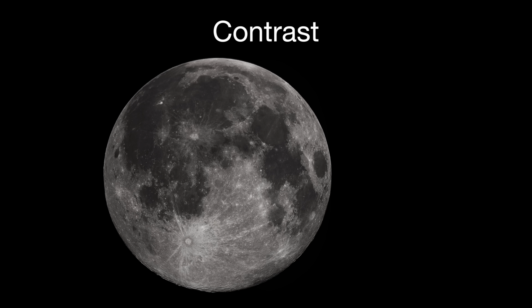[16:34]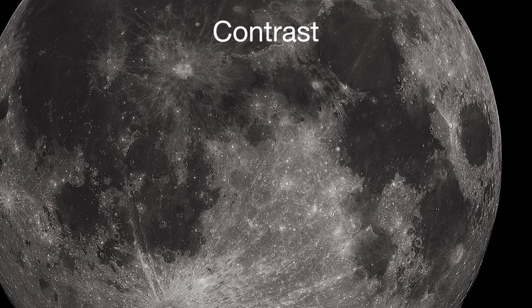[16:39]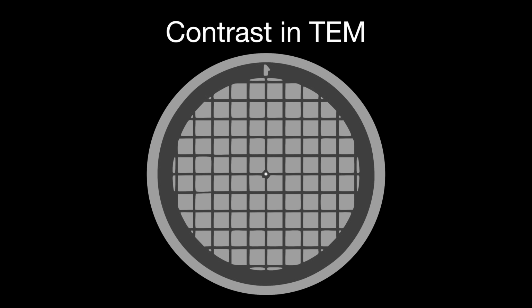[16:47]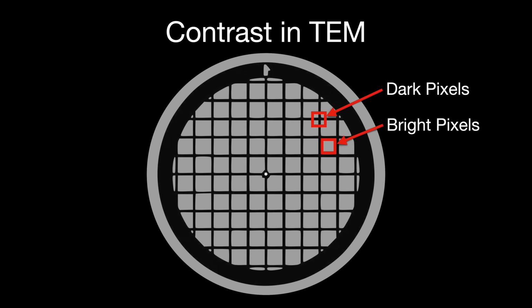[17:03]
As a reminder, contrast is the difference between the brightest and darkest pixels in an image. Even if your image is very sharp, it's difficult to make out details if the contrast is low. If we want maximum detail, we need maximum contrast. In a TEM, contrast comes from the difference between the darkest areas, those that block all electrons, such as the metal grid, and the brightest areas, in this case the electron mirror below the grid. To achieve maximum contrast, we need to do whatever we can to both make the grid as dark as possible and make the electron mirror below as bright as possible. This will give us the best possible image quality in our transmission electron image.
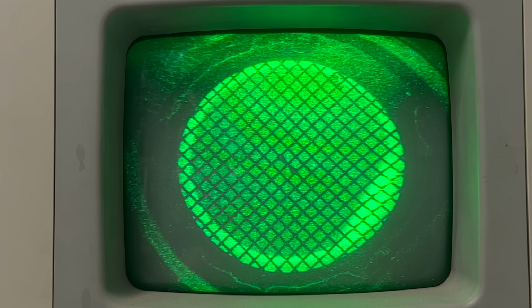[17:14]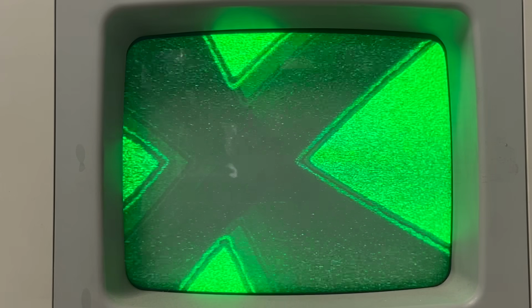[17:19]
As you can see here, our contrast is a little low. The mirror below could definitely be brighter, and the grid isn't totally black either.
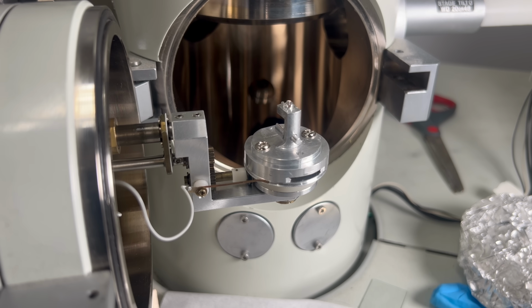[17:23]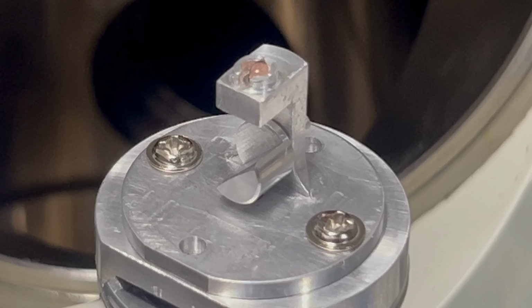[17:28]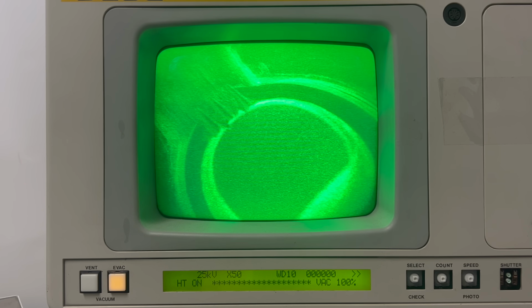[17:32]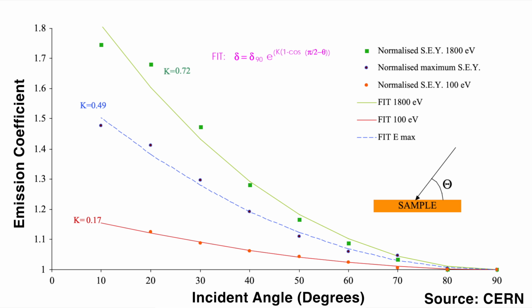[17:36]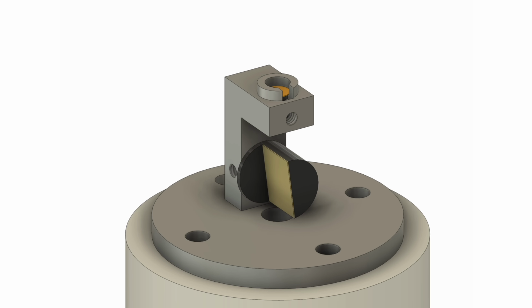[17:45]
I have a couple ideas on how to improve the contrast. The first is to take advantage of the movable mirror. Remember earlier how the vertical edges of the aluminum pieces were bright compared to the flat faces? Well, that's because the angle of a piece of material relative to the electron beam greatly affects the amount of secondary electrons emitted. This is why I made the mirror movable, to determine the angle at which the detector captures
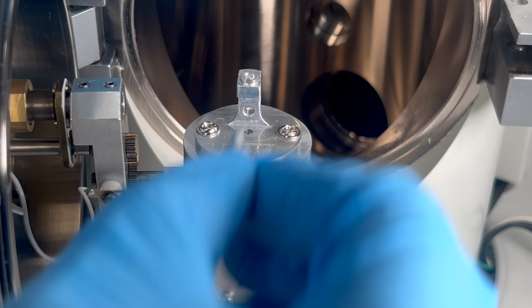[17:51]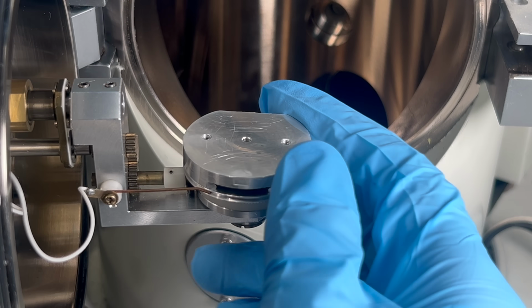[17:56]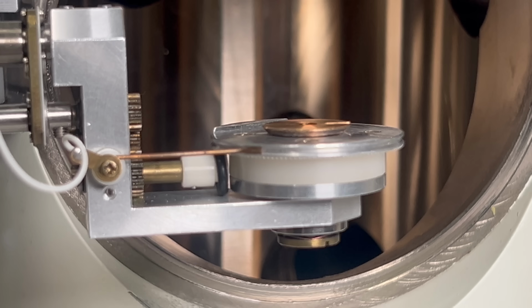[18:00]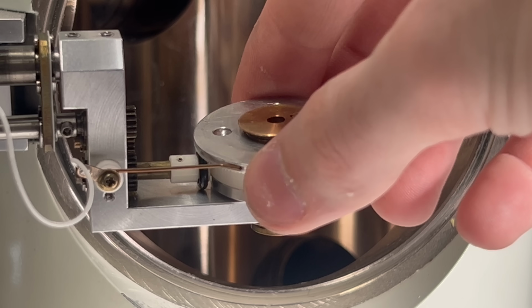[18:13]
the most secondary electrons. The only problem is, I can't exactly stick my hand into the microscope and pivot the mirror while the electron beam is on and the system is under a high vacuum. I think I have an idea. If we look at the sample stage, we can see that the knob that rotates the stage is connected to this little shaft here that spins. Let me see if we can't use that to our advantage.
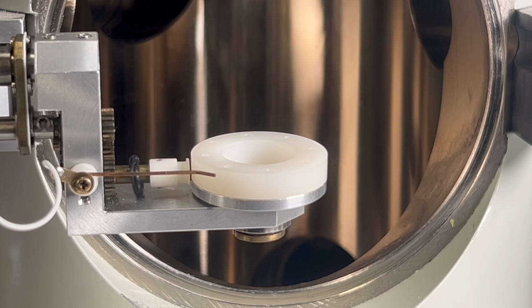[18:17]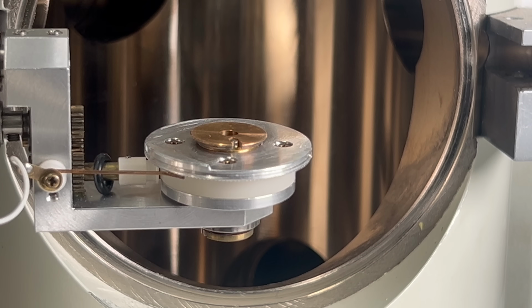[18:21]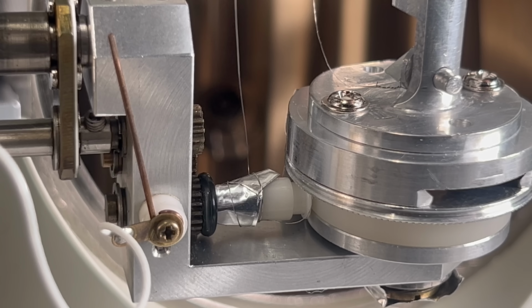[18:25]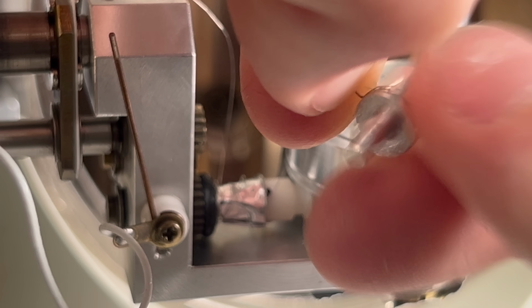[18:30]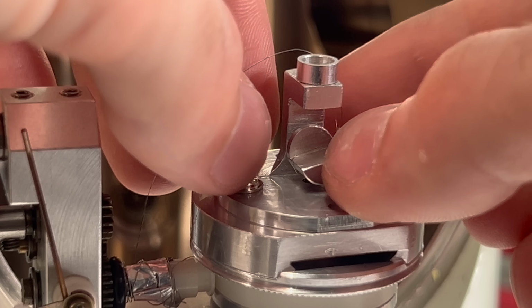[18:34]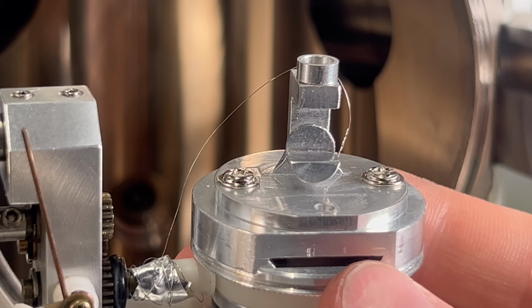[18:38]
If I disconnect the O-ring that drives the stage, then twisting the rotation knob will only rotate the shaft and nothing else. If I then wrap some tiny metal wire around the shaft, then I can create a little wire reel. If I connect the other end to the mirror, then hopefully, when I spin the external knob, it will rotate the shaft, which will pull on the wire, and that will change the angle of the mirror. Moment of truth. Wow, I can't believe that actually worked.
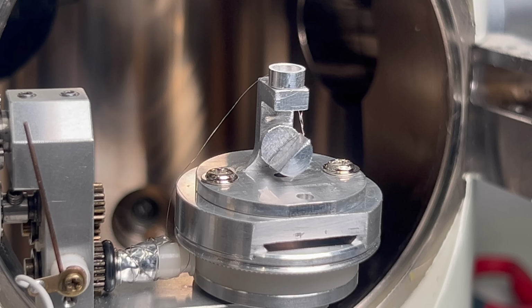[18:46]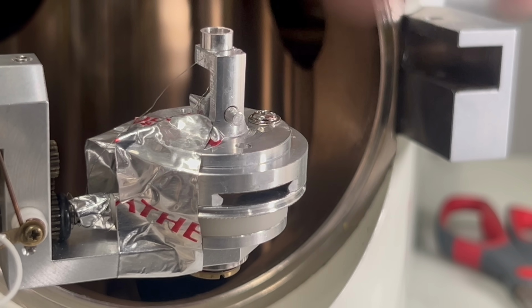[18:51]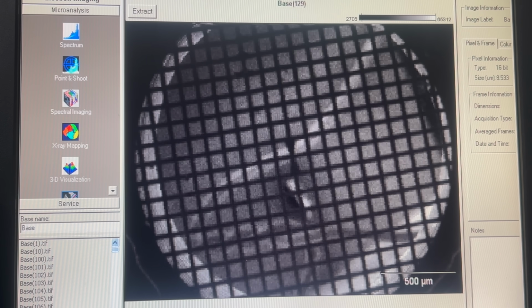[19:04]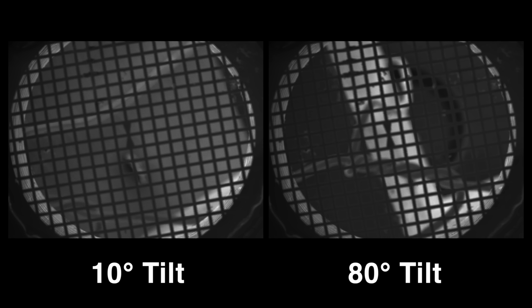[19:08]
One thing I need to do now, though, is to lock down the stage and make sure it doesn't spin. Okay, perfect. Let's turn the microscope back on and see what this looks like. You can see that as we tilt the mirror, the brightness changes dramatically, especially at very steep angles. I set up the computer capture device and took a set of photos in order to measure this effect.
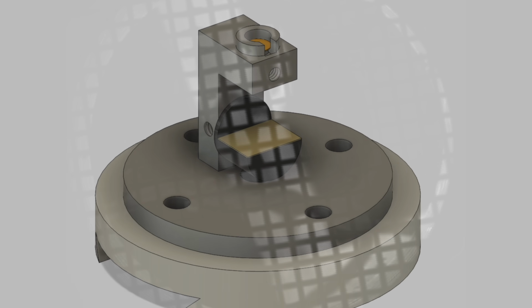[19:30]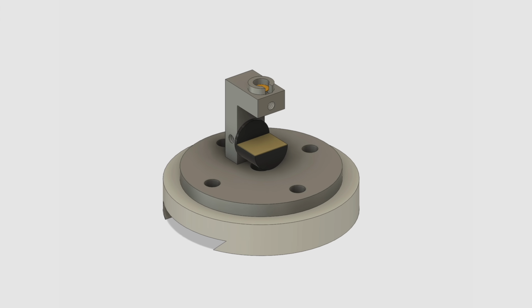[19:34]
It's clear that if we want to maximize the contrast, then we should obviously tilt the mirror as much as we can. However, there is an obvious problem. If we tilt the mirror too much, then only the samples in the very center of our image are going to have the mirror still underneath. The exact location of the sample on the grid will limit the maximum tilt of the mirror. That is an inevitable limitation of this type of STEM-in-SEM adapter.
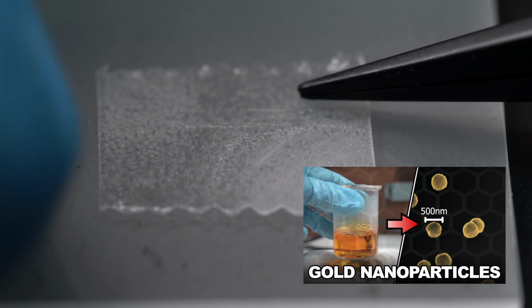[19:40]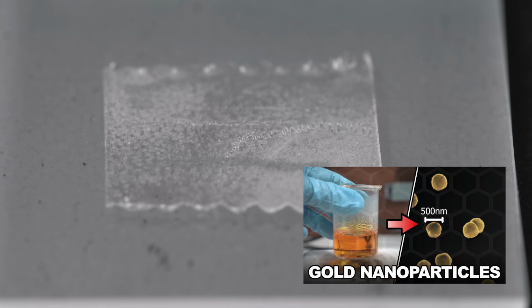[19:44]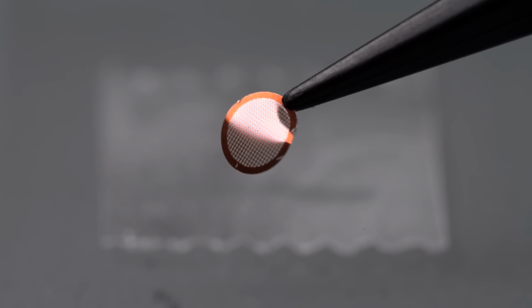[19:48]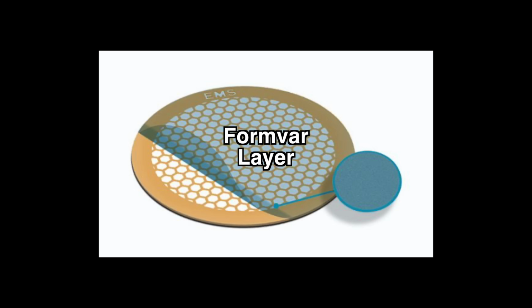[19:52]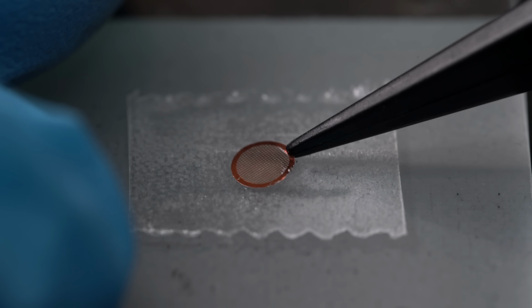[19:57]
Okay, I think it's time to test a real sample, and I have just the thing. Gold nanoparticles. I showed how to make these in an earlier video. Let's see if we can put some gold nanoparticles on a TEM grid. I have here a FormVar-coated grid. The FormVar is an extremely thin plastic sheet that spans the holes in the grid. If you'd like to know how I made these, check out my last video.
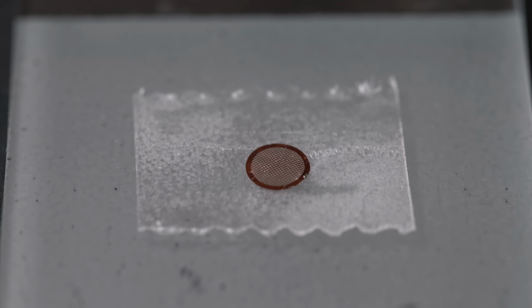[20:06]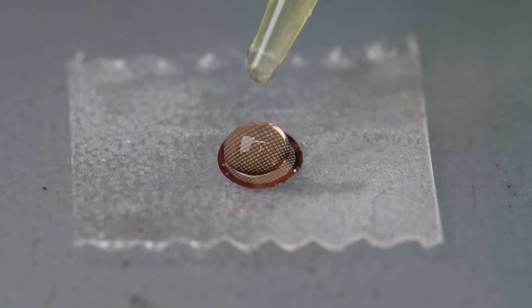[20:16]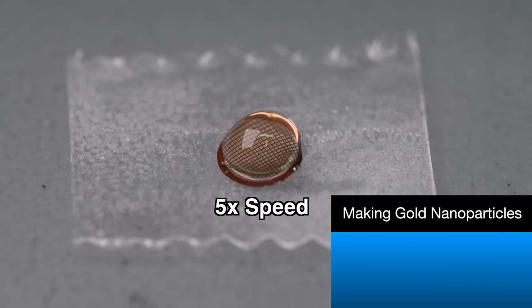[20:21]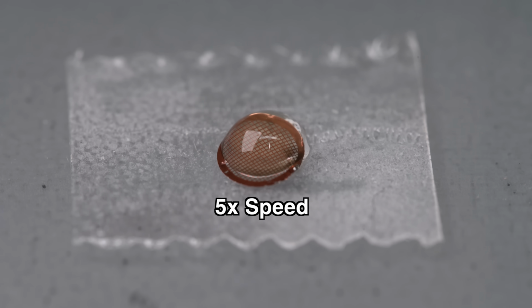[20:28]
My goal is to create gold particles roughly 100 to 1000 nanometers in size, and deposit them on the FormVar surface. I start by adding 10 microliters of a chloroauric acid solution on the surface of the grid. To that, I add 10 microliters of a sodium metabisulfite solution. This causes a chemical reaction where the gold comes out of solution and forms tiny spheres, or nanoparticles. Nanoparticles below 100 nanometers in size can generally remain suspended in solution, but the ones I'm making here are large enough that they should settle to the bottom.
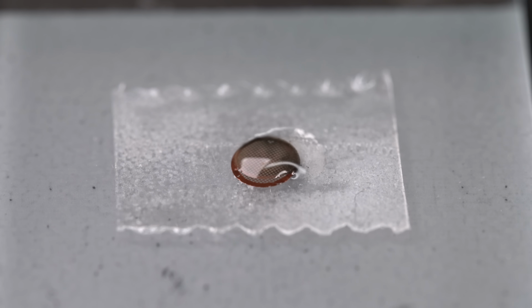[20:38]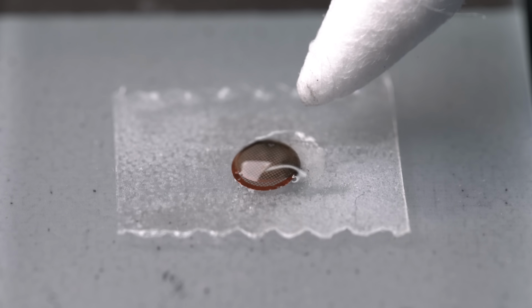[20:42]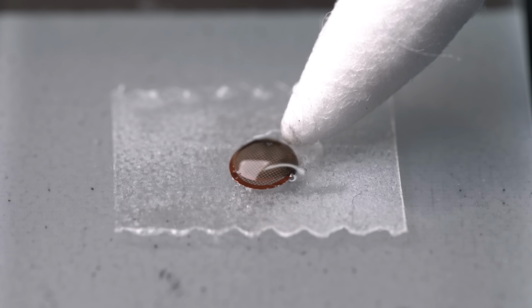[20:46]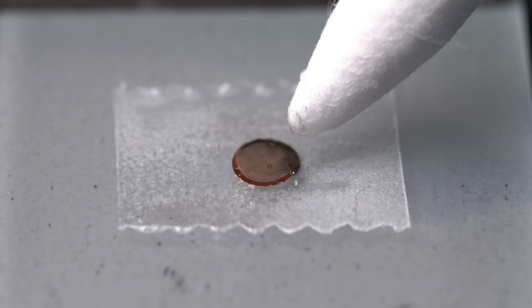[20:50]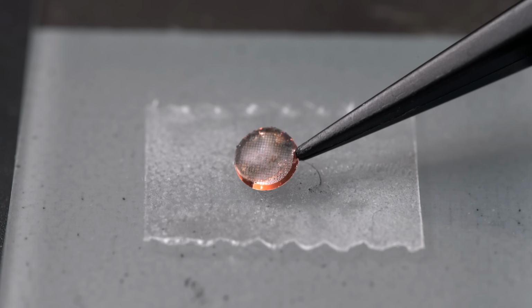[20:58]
Alright, the reaction seems to be finished. Now I need to remove the remaining liquid. Let's see if I can wick up most of it with this Q-tip. And there we go. Awesome, that worked really well actually. Now I just need to leave the grid for a few more minutes to fully dry. Perfect. Let's transfer this to the sample holder and then put it in the SEM for testing.
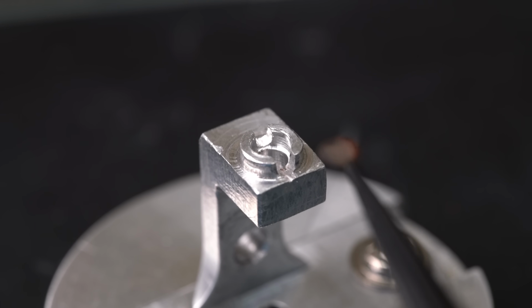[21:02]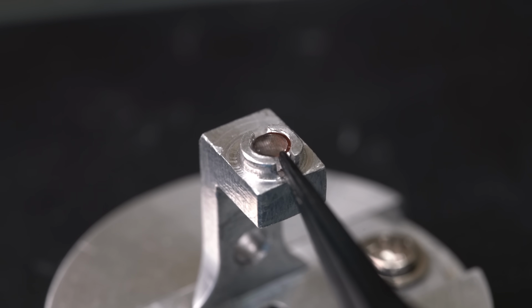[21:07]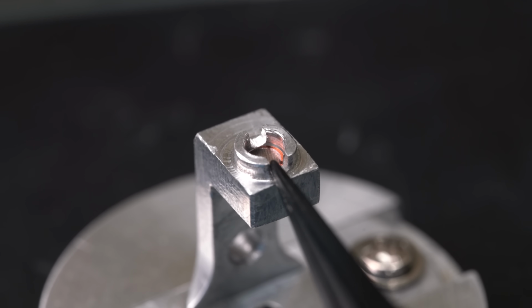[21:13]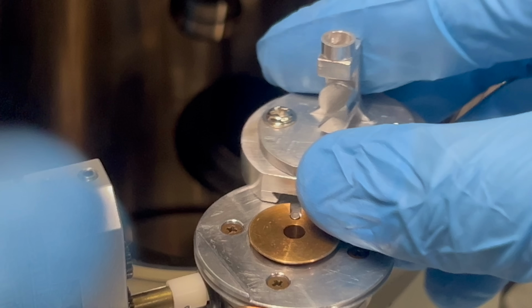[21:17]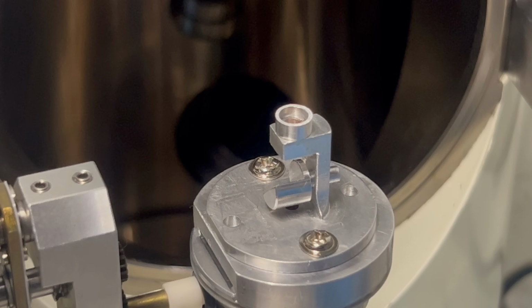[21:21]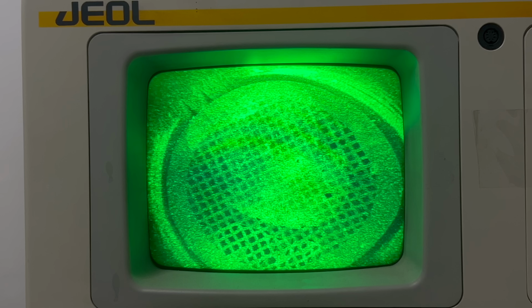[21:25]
I don't know if it comes across on camera, but these grids are incredibly tiny. I'm doing my best not to mistreat these grids, but man, this is difficult. Come on, come on. There we go. Alright, that'll do. I reinstalled the shield and mounted the assembly back on the sample stage. Let's fire the SEM back up and see what this looks like.
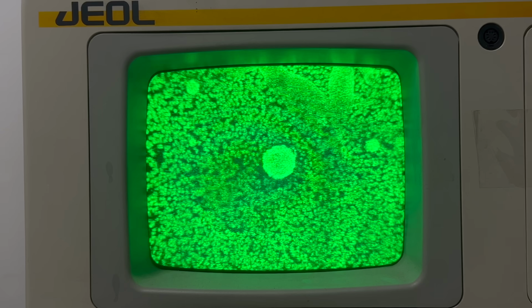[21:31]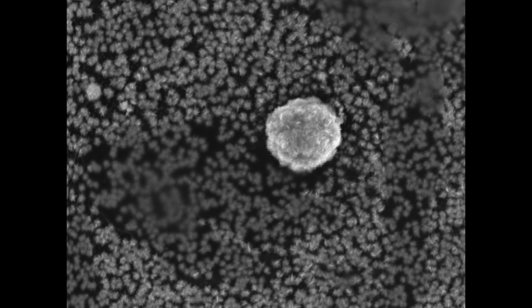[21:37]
Okay, something is definitely wrong here. You can definitely see that we've created a whole bunch of nanoparticles, but check out this big one in the center. Do you see how it's very bright and looks three-dimensional? Yeah, that's not a transmission image.
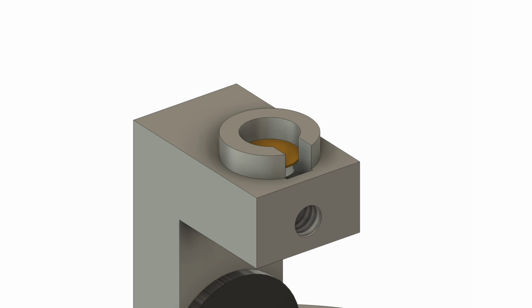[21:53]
That is definitely a secondary electron image. The shield is supposed to completely block the secondary electron image, so clearly it's not working properly. Let's figure out why that is. So this is our current shield design.
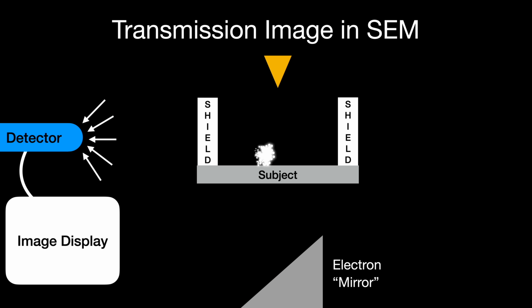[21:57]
The idea is that any secondary electrons emitted from the surface of the grid will get blocked by the shield before making it into the detector. My original assumption was that the shield just needed to be placed in between the source of the secondary electrons and the detector in order to block them. However, what's probably happening is that the secondary electrons are being ejected in a way which allows them to bypass the shield and still make it to the detector.
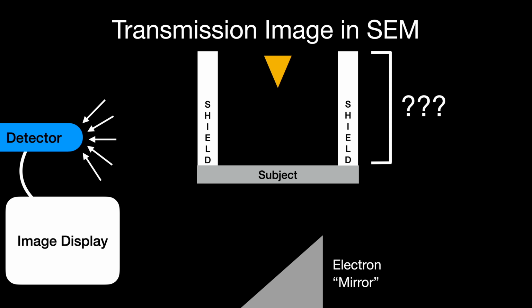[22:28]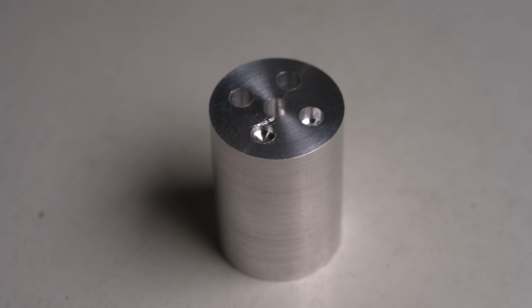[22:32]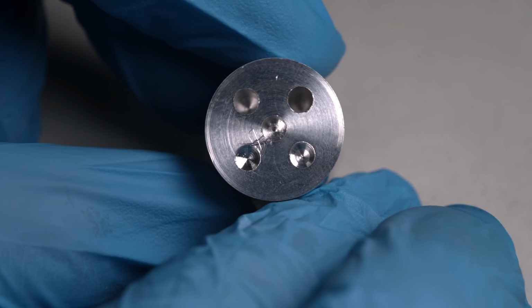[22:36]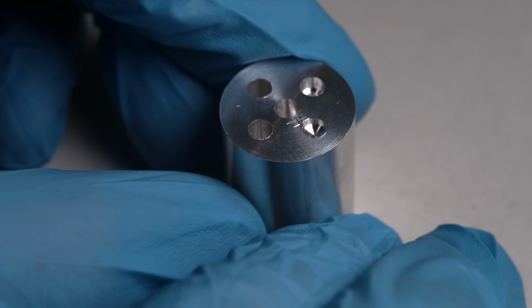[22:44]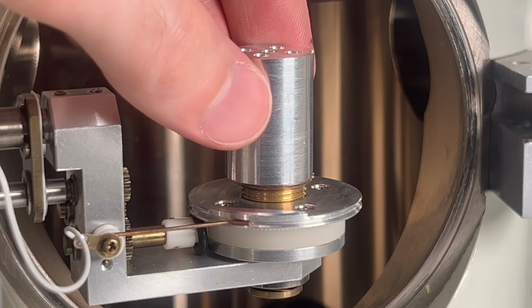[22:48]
This could probably be mitigated if our shield were substantially taller. But how tall does it need to be exactly? Well, to determine that, I made this. It's a piece of aluminum with several holes of different depths. The expectation is that as the depth increases, fewer of the secondary electrons from the bottom surface will reach the detector, and the bottom surface will be darker in our image. This should give us useful data on how tall the shield needs to be.
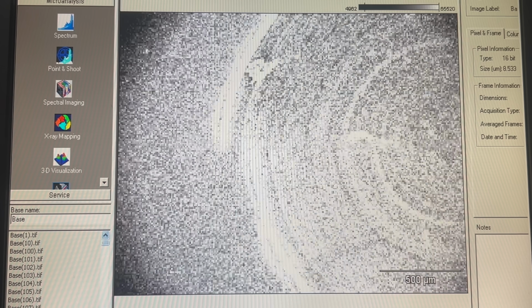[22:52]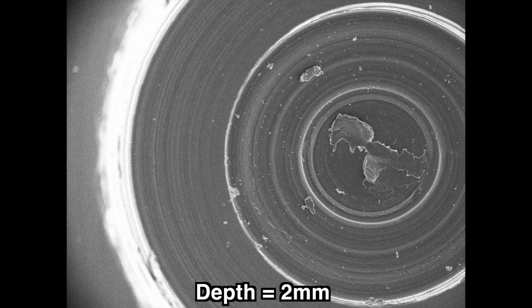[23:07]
Here is the hole that's 1 millimeter deep. You can see that the average brightness is about the same inside the hole as it is at the top surface. This indicates that the hole is not deep enough to meaningfully block the secondary electrons. However, as we increase the depth to 2 millimeters, you can see that the surface at the bottom is noticeably darker, indicating that fewer of the secondary electrons are reaching the detector.
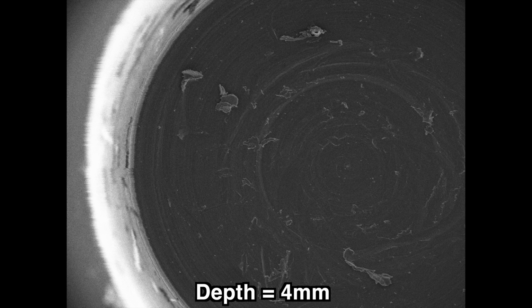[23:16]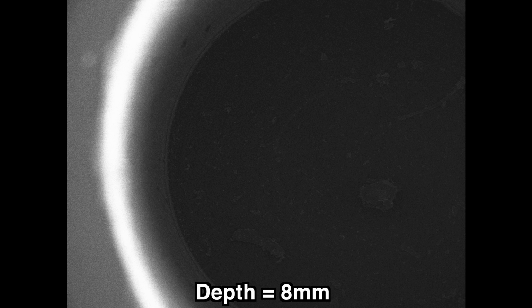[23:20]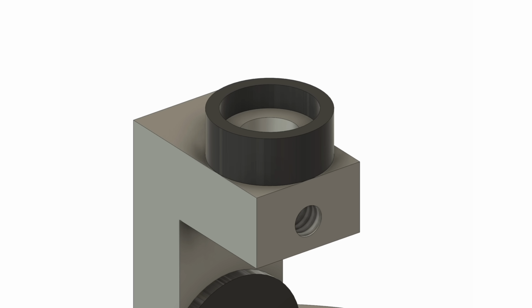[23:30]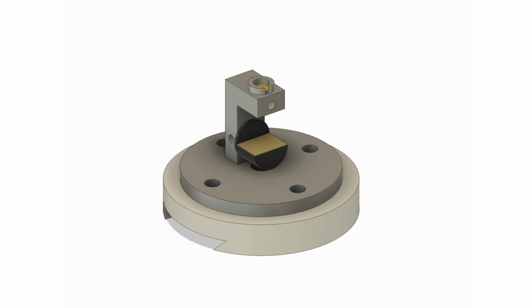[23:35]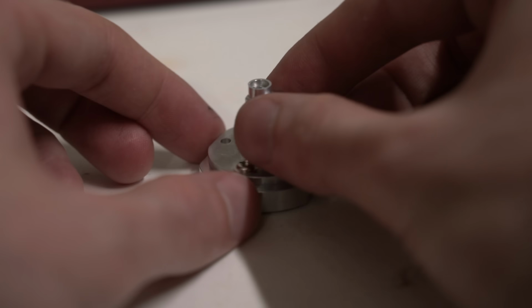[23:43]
As we increase the depth to 4 millimeters, you can see a noticeable improvement, which gets even stronger at 8 millimeters. And at 16 millimeters, the surface inside is basically pitch black, indicating that virtually zero electrons are reaching the detector. So this data tells us that our existing shield is definitely not tall enough. The problem is, our current design is already as tall as it can be without risking damage to the SEM. Are we doomed? Well, not quite.
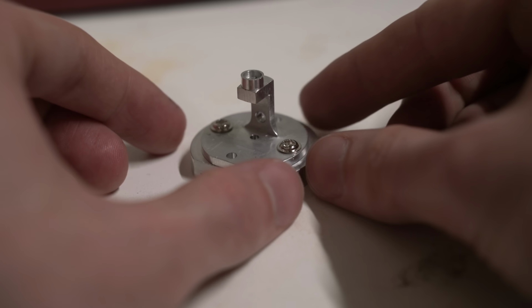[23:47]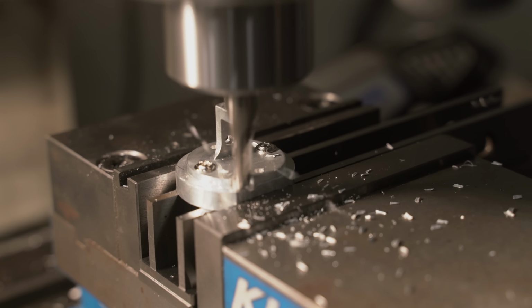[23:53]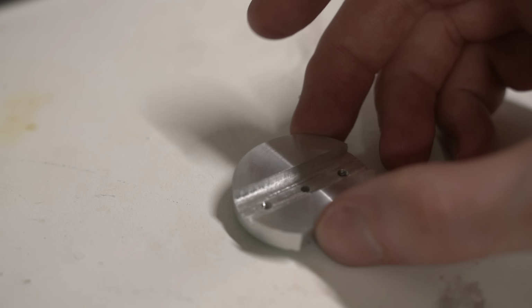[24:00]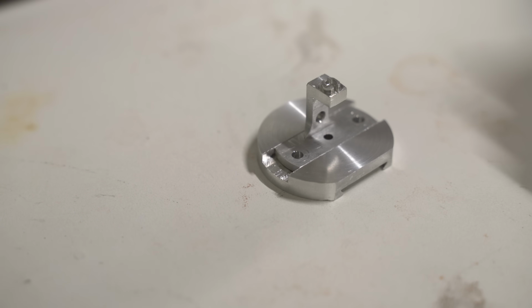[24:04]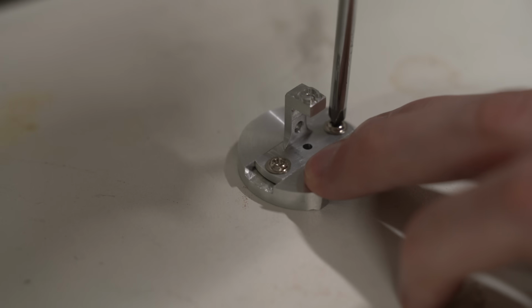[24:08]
I took a look at our current sample holder and realized that we can probably make this shorter. The reclaimed height then can be used for a taller shield. I machined the sides off the bottom of the sample holder and then cut a matching slot into the base. And check it out. I managed to reduce the height by several millimeters at least. Now I can fit a much taller shield than before.
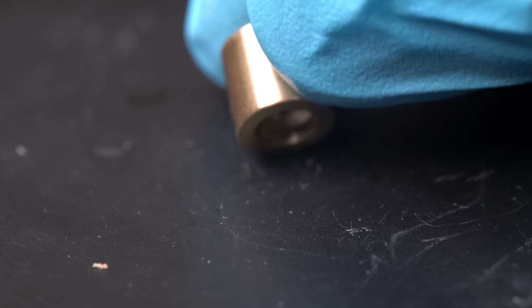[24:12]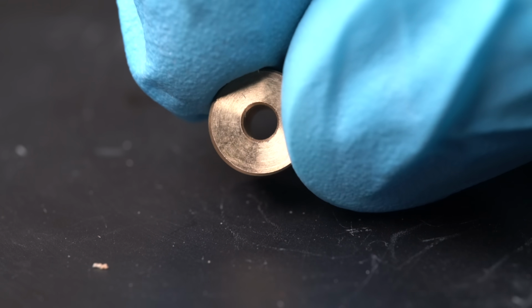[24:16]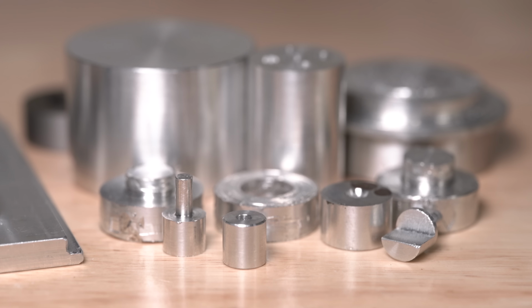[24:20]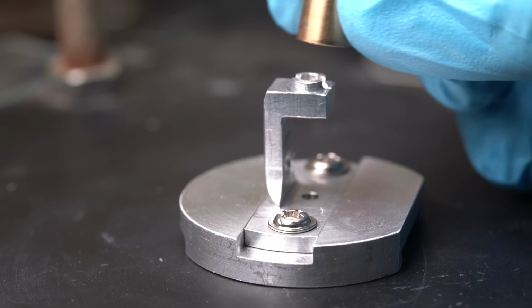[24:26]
And here is my new shield. It's much taller than before, and it has a smaller top hole. If you're wondering why I made it from brass, it's because I kept losing the tiny aluminum shields amongst the sea of other tiny metal objects in the shop. Brass is a lot more visible. Anyway, let's put this into the SEM and see if it works.
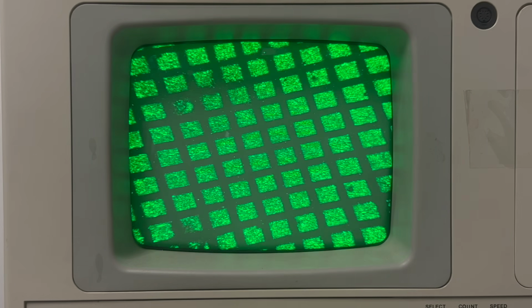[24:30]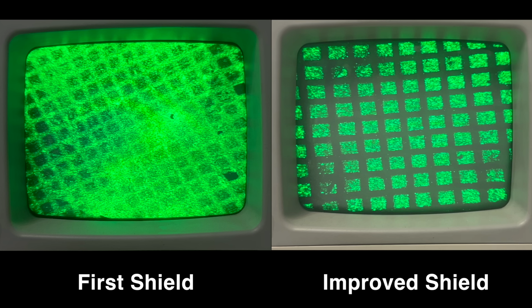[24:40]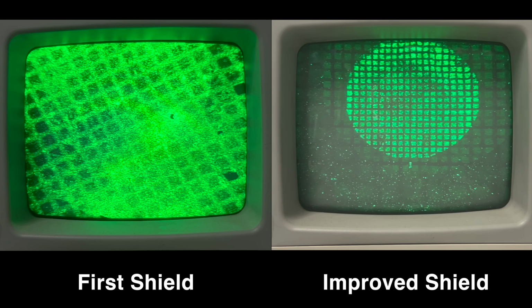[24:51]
Oh wow, that is a huge improvement. Take a look at the difference between the first and second shield. With the first shield, we very clearly saw the secondary electron image. With the new shield installed, the grid is basically black. This indicates that we have almost entirely eliminated the secondary electron signal that was plaguing us earlier.
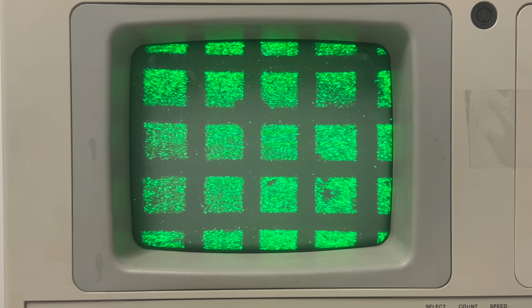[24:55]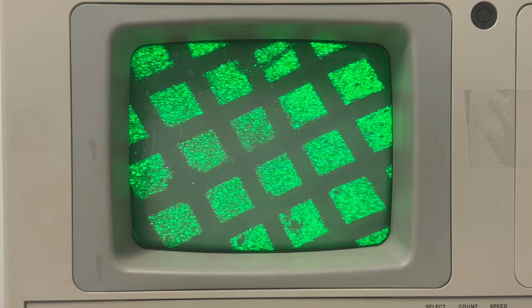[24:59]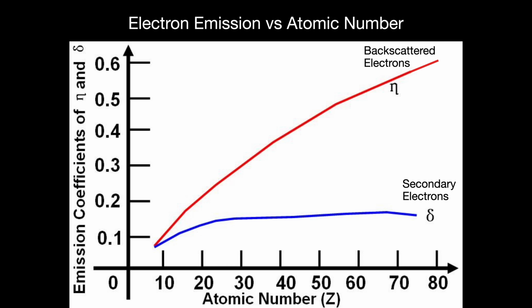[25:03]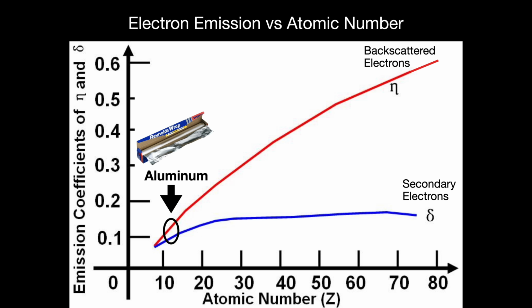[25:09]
Now that we've done that, there's really only one more way to improve the image contrast further. We need to make the mirror even brighter. Fortunately, I know of an easy way to do this. The number of detectable electrons emitted from a surface greatly depends on atomic number. Aluminum is only atomic number 12, but gold is atomic number 79. If we were to coat the aluminum mirror in gold, then that would increase its brightness, which would therefore increase the contrast in our image.
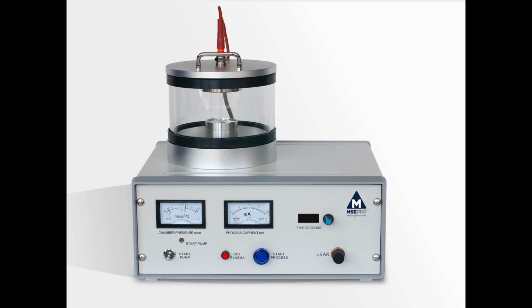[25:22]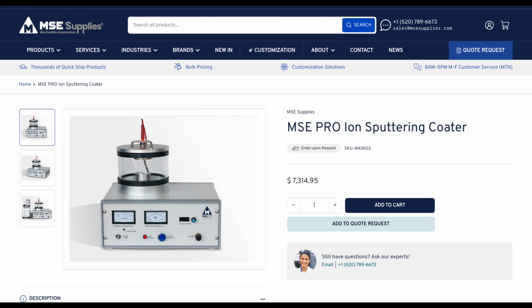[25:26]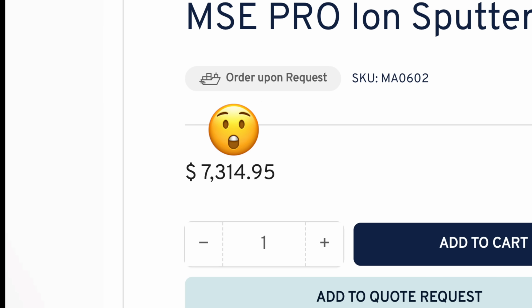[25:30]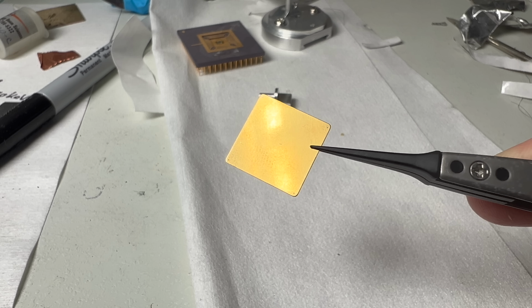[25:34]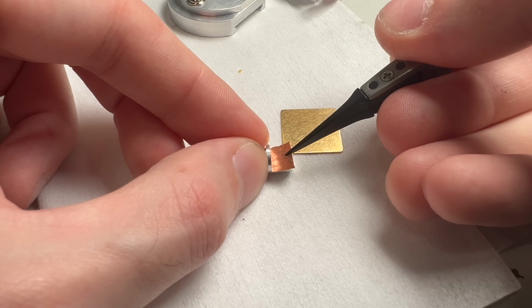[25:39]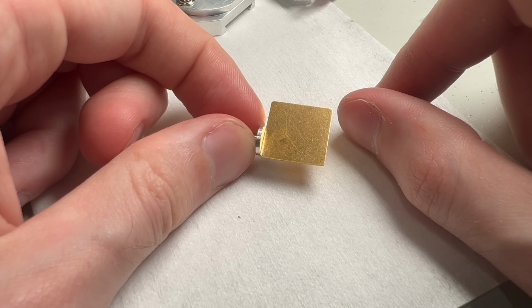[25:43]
Ideally, I'd use a vacuum deposition machine to coat the aluminum piece in gold, but unfortunately, my vacuum deposition machine is in the shop right now. I think I have a reasonable alternative. This is the lid to the integrated circuit I showed in the first SEM video. It's a little awkward, but I can attach it to the mirror with some conductive tape. Perfect. Let's reinstall it in the SEM and see if that had an effect.
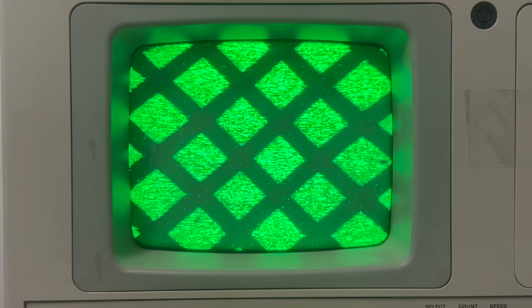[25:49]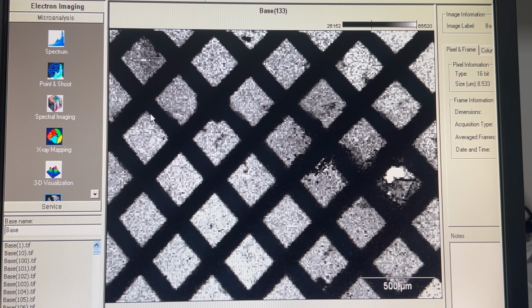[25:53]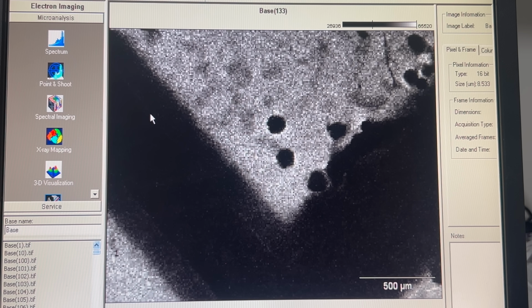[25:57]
It might be better. I think we've reached good enough territory. Alright, I think I'm satisfied enough with this apparatus. Let's check on those nanoparticles again. Okay, this looks promising.
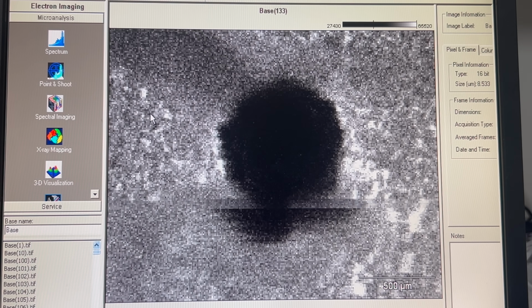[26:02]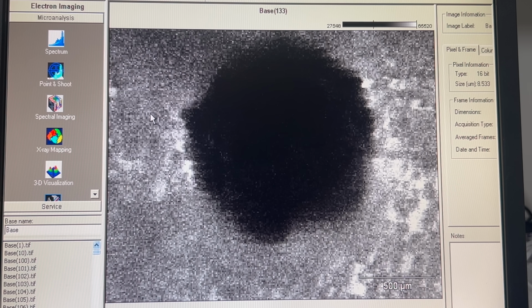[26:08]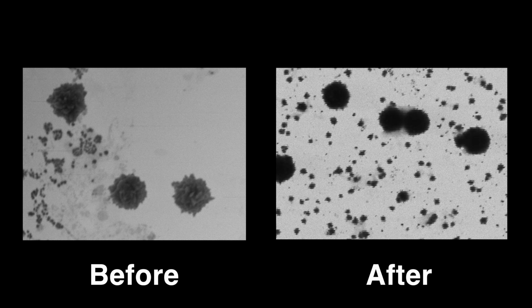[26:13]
Alright, that actually looks pretty good. The nanoparticles appear dark and two-dimensional, which means that this is definitely a transmission image and not a secondary electron image. The new shield is a very clear improvement when it comes to blocking unwanted secondary electrons.
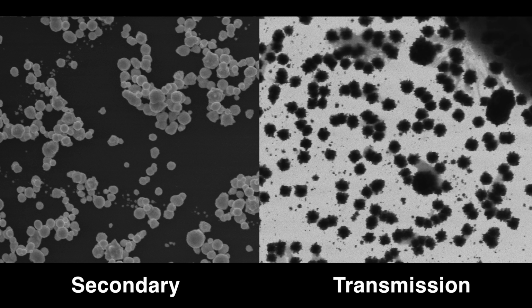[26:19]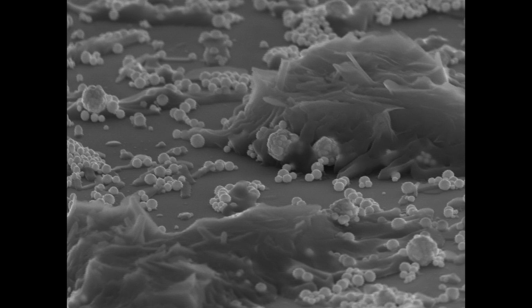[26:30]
But wait, I hear you say. The secondary electron images look way better than the transmission images. Why did we go to all of this trouble just to produce something that looks worse? Well, the answer to that is simple. It's because we're looking at gold nanoparticles. I chose gold nanoparticles as our test subject because they're suitably small and because I had them on hand.
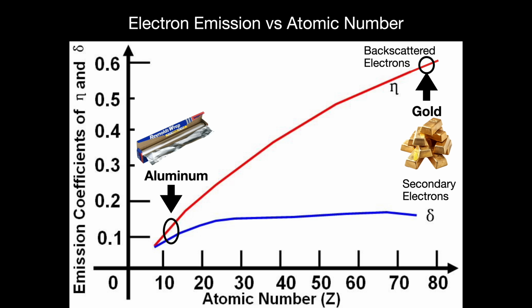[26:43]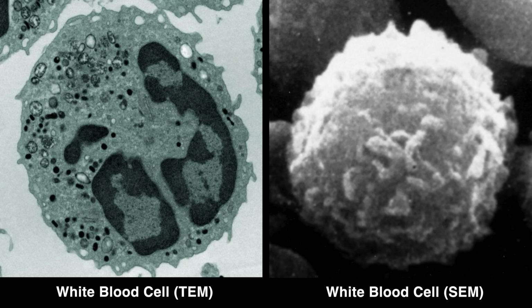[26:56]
However, if you remember, dense metallic objects like gold are actually the best possible subjects for secondary electron imaging. If we want to show off the true capabilities of the STEM adapter, then we need subjects that produce poor secondary electron images. If you remember from earlier in the video, transmission electron imaging really shines when we use it to image organic materials, especially cells.
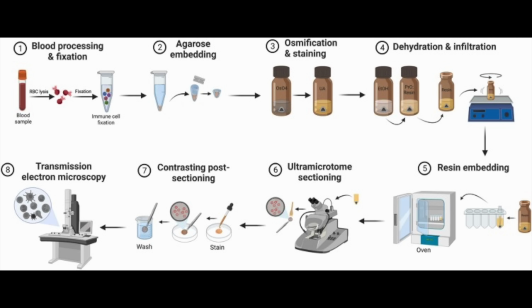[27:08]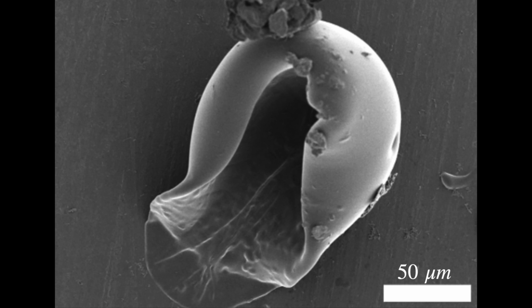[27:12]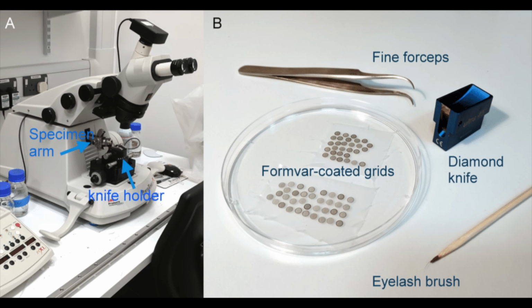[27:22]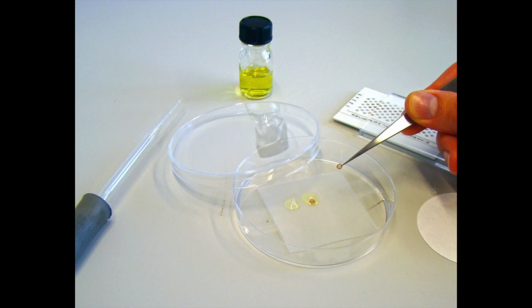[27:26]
So let's image a cell then. Well, not just yet. Cells actually require extensive preparation before they can be imaged in an electron microscope. For starters, cells are full of water, and if you put them into the vacuum of the SEM chamber, they will violently explode as the water in the cells suddenly boils. They also need to be properly preserved, then cut into incredibly thin sections and stained with exotic heavy metal salts like lead citrate and uranyl acetate. So cells will have to wait for a future video.
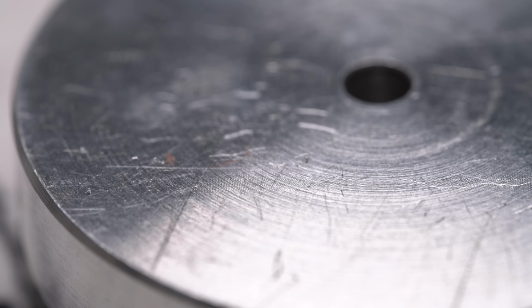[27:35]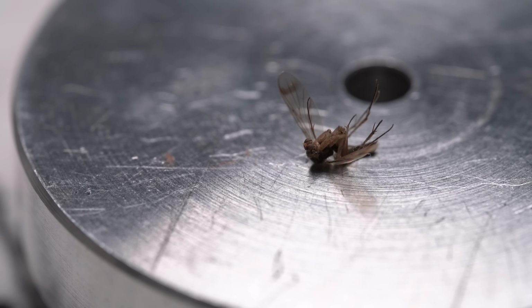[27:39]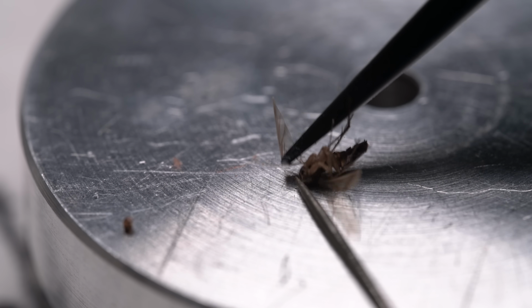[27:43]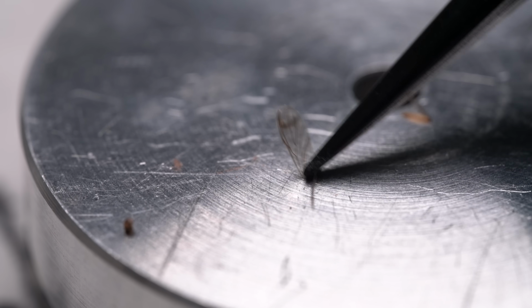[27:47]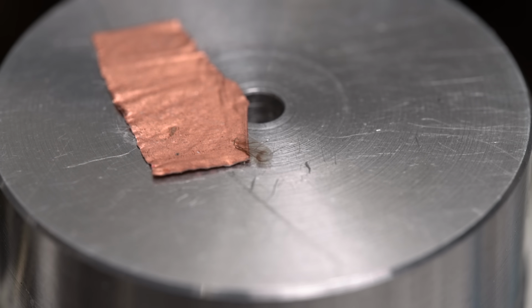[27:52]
However, I think I can find something organic and thin enough to produce a usable transmission image as a demonstration. I scavenged around the house and found this dead mosquito. I suspect that the wings might just be thin enough that they'll allow some of the electrons to pass through and create a usable transmission image. But first, let's take a look at it as a secondary electron image.
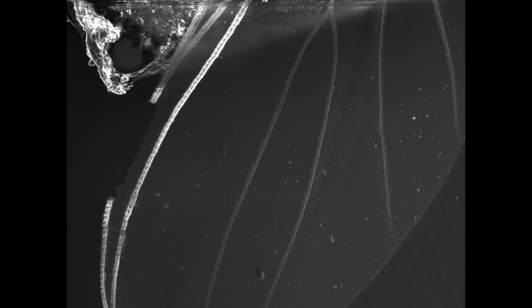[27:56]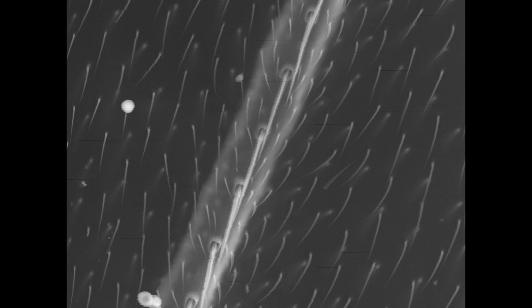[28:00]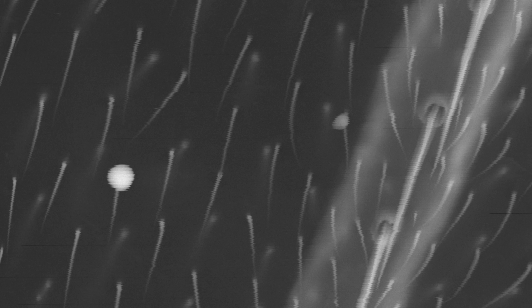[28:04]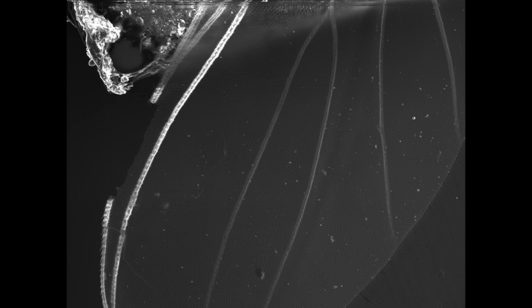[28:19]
This is the mosquito wing as it appears in an ordinary SEM. When we zoom in, we can make out a bunch of little hair-like structures all over the wing, as well as some other mystery objects scattered around. What's noticeable here is the general lack of detail. Organic material is mostly carbon, oxygen, and hydrogen, and these low-density atoms just don't emit that many secondary electrons, which makes our image pretty poor.
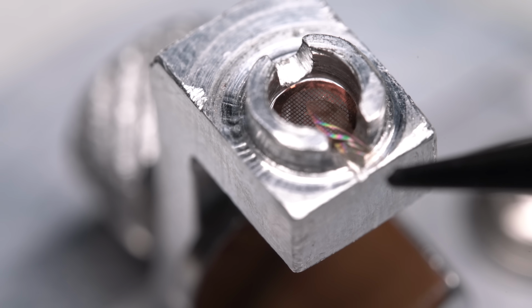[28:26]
Now let's try looking at the wing as a transmission electron image. I carefully placed the wing on the TEM grid. Let's see what this looks like in the microscope. Okay, so this is interesting. A few things are noticeable right away. First, the transmission image appears to have a lot more contrast than the SEM image.
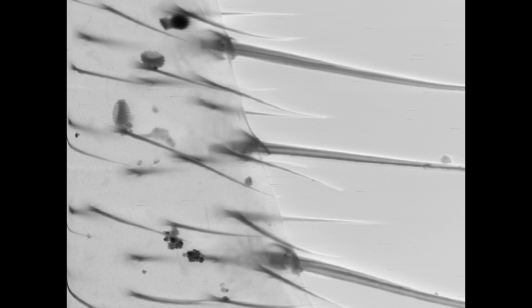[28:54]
We can clearly see that the bottom half of the wing is thicker than the top half, which is nearly transparent to the electron beam. And when we zoom in, we can make out a lot more details in the small structures of the wing. And those random objects scattered around the surface, those are more detailed too, though I still have no idea what they might be. So I think that this at least proves that our STEM adapter is working properly. We've succeeded in adding transmission imaging capabilities to the Scanning Electron Microscope.
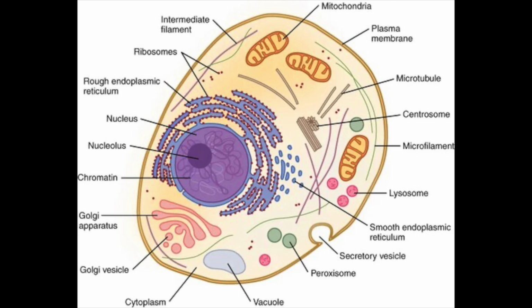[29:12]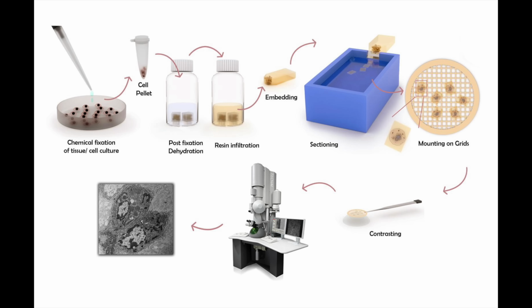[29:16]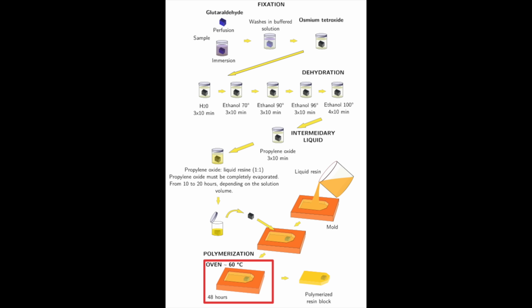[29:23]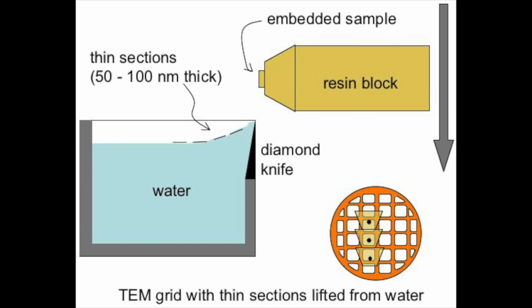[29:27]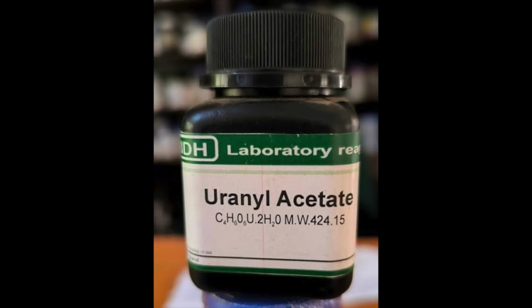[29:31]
So where do we go from here? Well, in order to achieve my goal of imaging cells, I need to acquire the ability to do the extensive sample preparation that cellular TEM images require. This process involves removing all the water in the cells and replacing it with solid resin, slicing the cells into 100 nanometer thick layers, and staining them with toxic heavy metal salts. However, all that is going to have to be part of a future video.